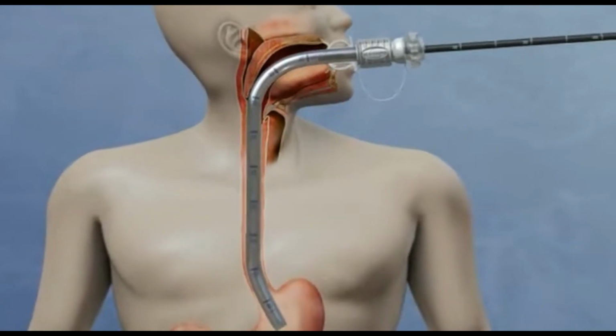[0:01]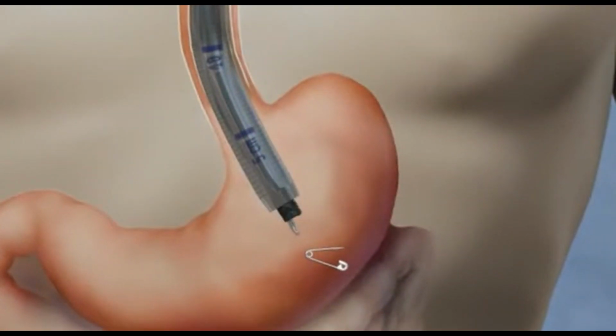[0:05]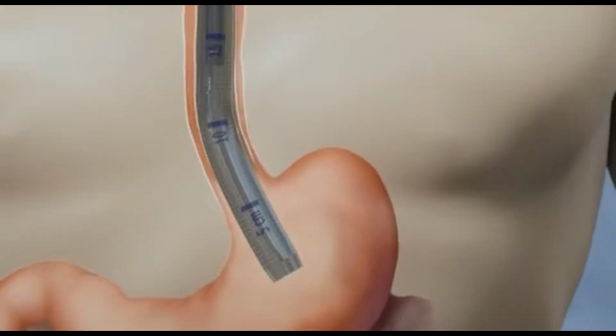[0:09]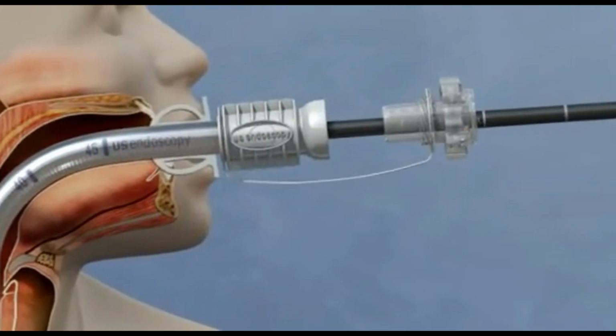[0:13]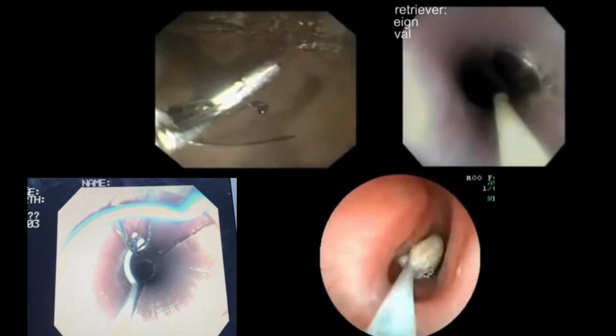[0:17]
Foreign body retrieval is a medical procedure used to locate and remove objects that have been accidentally swallowed or inserted into the gastrointestinal tract. This procedure involves using an endoscope to visualize the foreign object in real time, followed by the use of specialized tools to grasp and safely remove it from the GI tract. Some examples of foreign body retrieval are shown here.
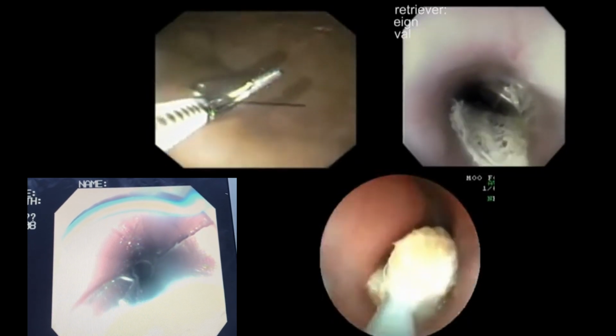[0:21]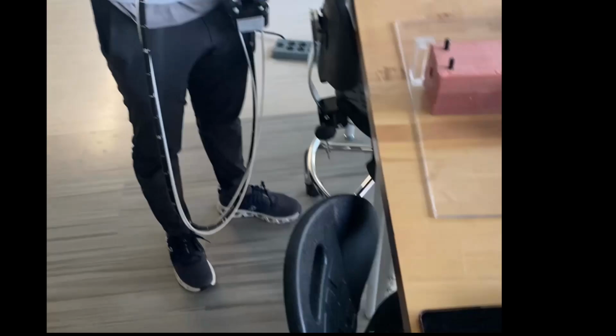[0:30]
However, what if I told you that one of these procedures is actually being performed on a completely synthetic GI tract? That's right, this recording was taken on a synthetic GI tract created completely by our Capstone team. To see how we got here, we have to rewind 3 months to the beginning of the semester.
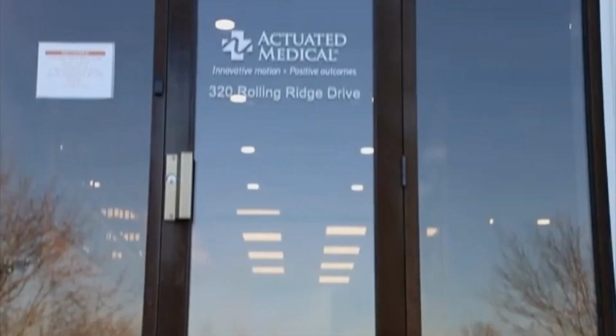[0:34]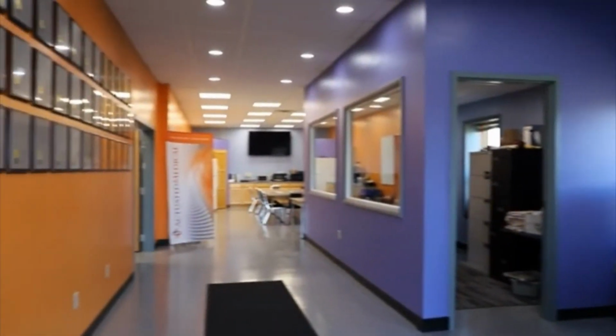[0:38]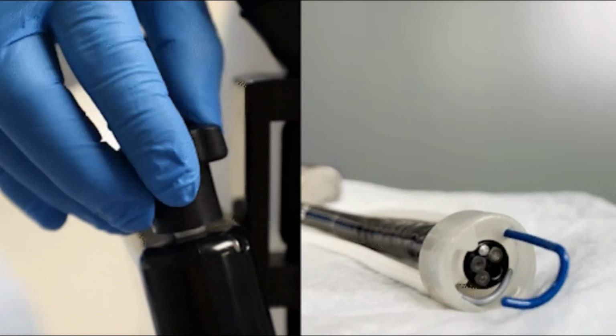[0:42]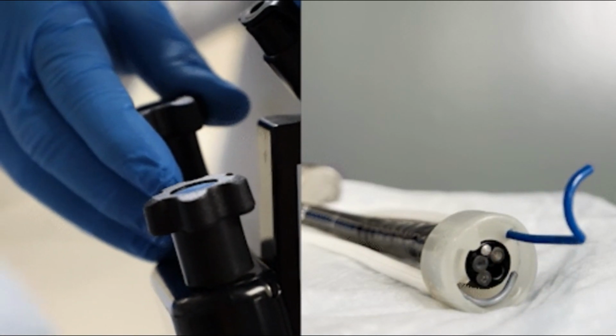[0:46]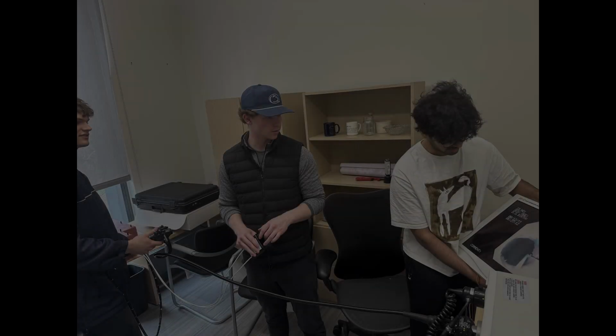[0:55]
Our group was initially retained by Actuated Medical to evaluate the effectiveness of their FDA-approved device, the GripTract. This device is currently approved for tissue manipulation during gastrointestinal procedures. We wanted to explore a new question. Could the GripTract also be used to retrieve foreign bodies from the GI tract? To answer this, we needed a realistic testing setup. Since no suitable products currently exist in the market, we decided to develop our own synthetic GI tract simulator.
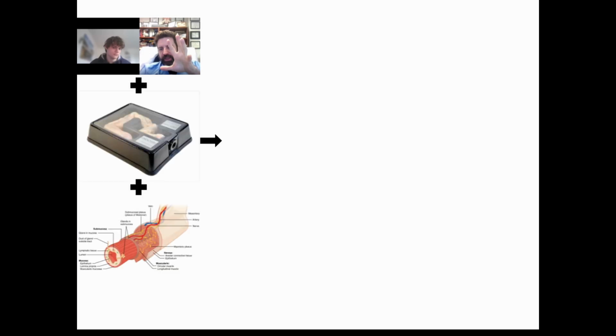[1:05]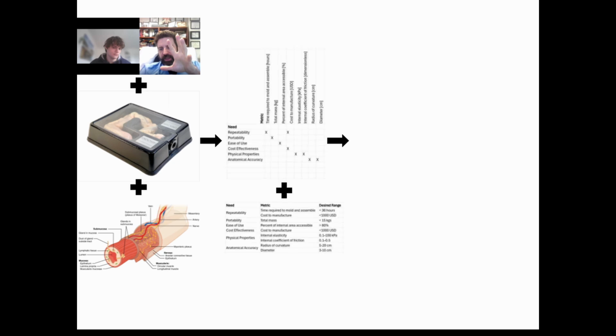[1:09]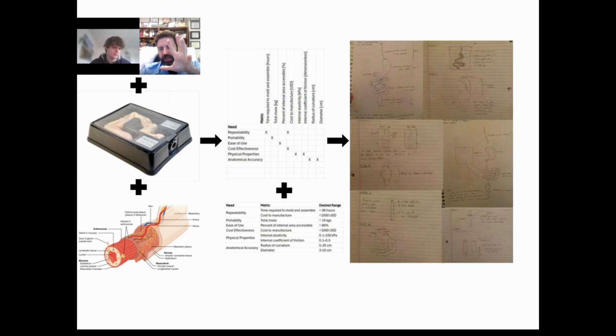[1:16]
Our journey began with interviews. We spoke to a wide range of clinicians involved in foreign body retrieval. At the same time, we performed a patent search and reviewed existing literature to better understand GI tract models. Based on what we learned, we developed a list of specifications and desired performance metrics that would help us evaluate the GripTract. Next, each team member brainstormed ideas, and we ended up with over 40 different concepts.
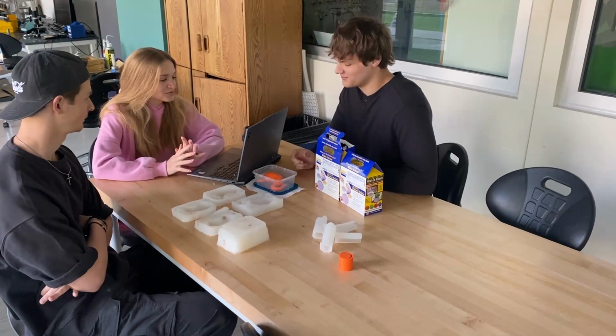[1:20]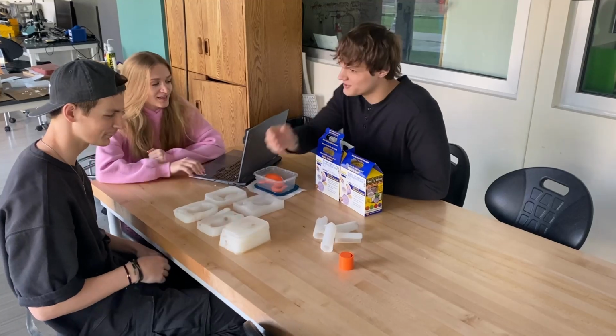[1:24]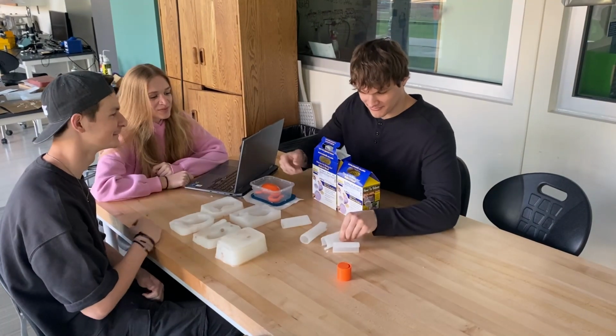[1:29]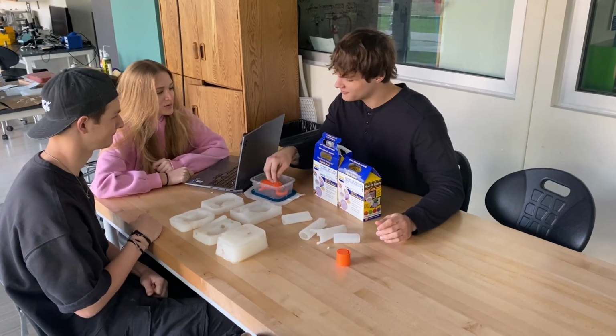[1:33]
We then moved into alpha prototyping, focusing on form and materials. We found that a tunnel-style design was the most accurate and durable approach, especially compared to simpler tube models. We made our first prototype by taking a scaled-down 3D model of the stomach, placing it in a container, and simply pouring silicone over it to create a flexible, realistic form.
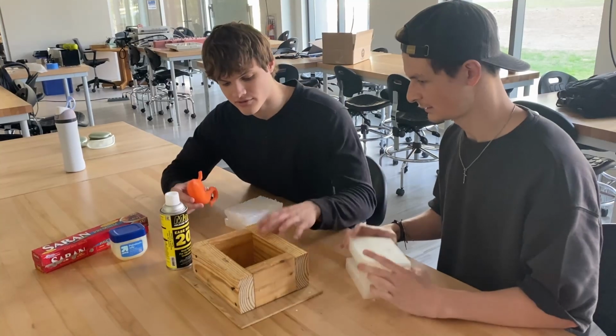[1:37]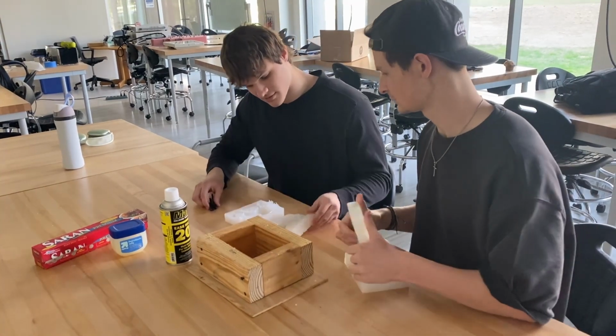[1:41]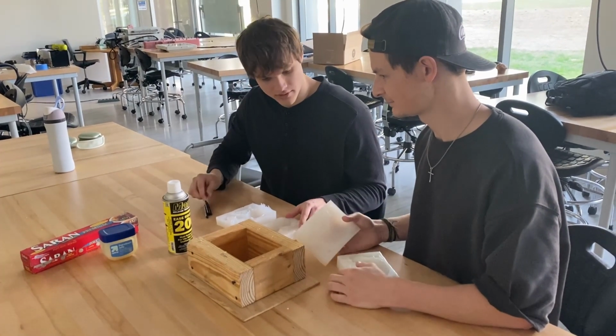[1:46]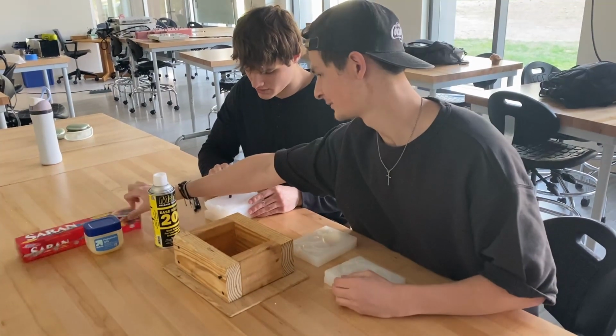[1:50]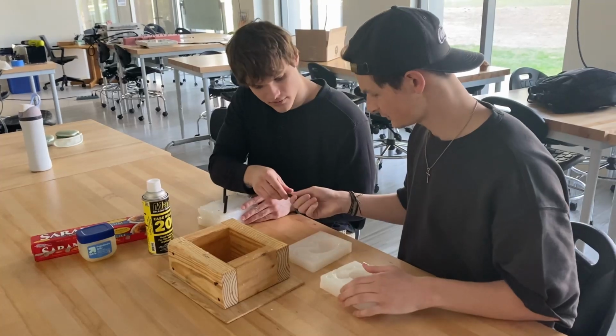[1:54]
In the beta prototyping phase, our challenge was to make the tunnel system easily accessible for inserting and retrieving foreign objects. We solved this by creating the model in 2 silicone halves that could be opened then resecured after each use. To make that work, we allowed the first layer of silicone to cure, applied a release barrier using petroleum jelly and anti-stick spray, then poured a second layer on top. This allowed us to separate the 2 halves cleanly.
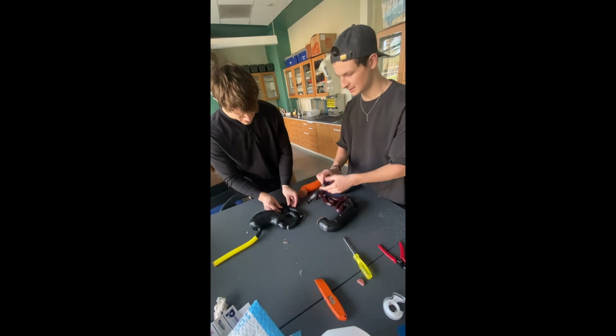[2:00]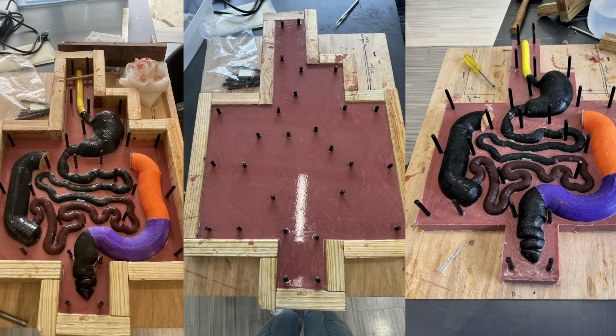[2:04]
With the process refined, we moved on to a full-scale version. We designed the model in SolidWorks, printed it in 8 sections, and glued them together. Then, we repeated the silicone pouring process, this time using 6 gallons of silicone dyed to simulate the natural color of the intestines. We also built a custom containment frame from 2x4s to help reduce silicone waste and match the model's unique geometry. Dowel rods were inserted to help align and secure the 2 halves.
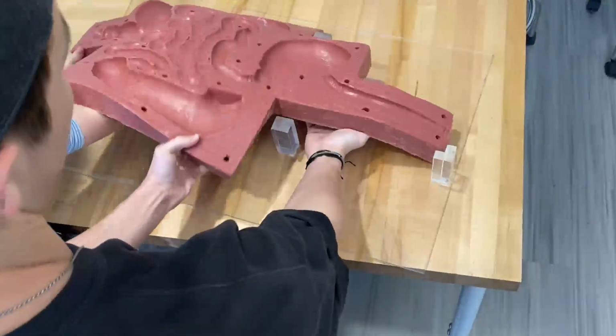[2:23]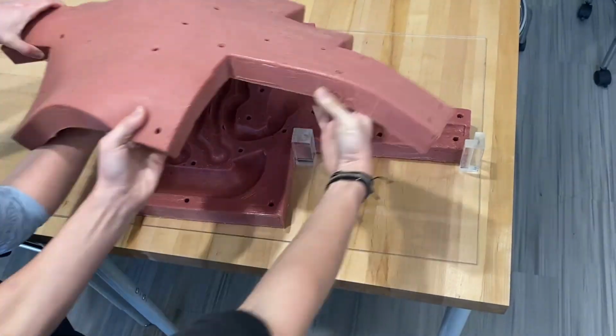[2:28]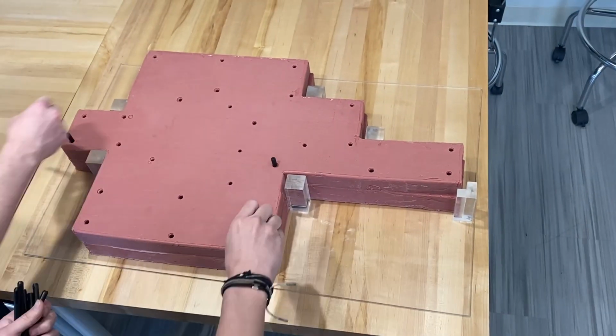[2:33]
For extra alignment support, we cut a 1/4-inch sheet of acrylic and fused acrylic prisms at key flex points to improve fit and stability. Finally, we had our completely synthetic GI tract, a 3-part system including a frame, bottom half of silicone, and top half of silicone, all secured using dowel rods.
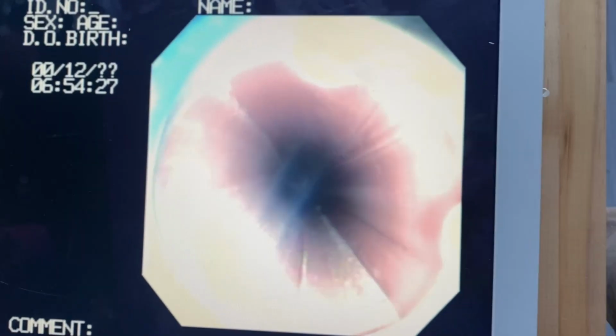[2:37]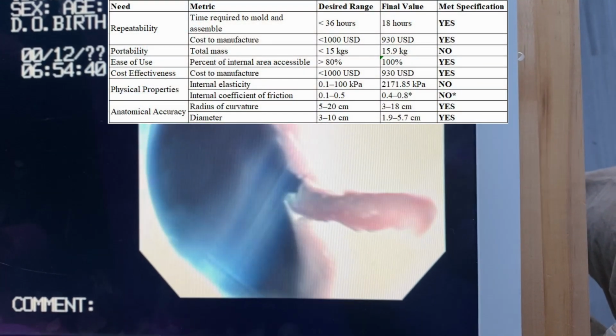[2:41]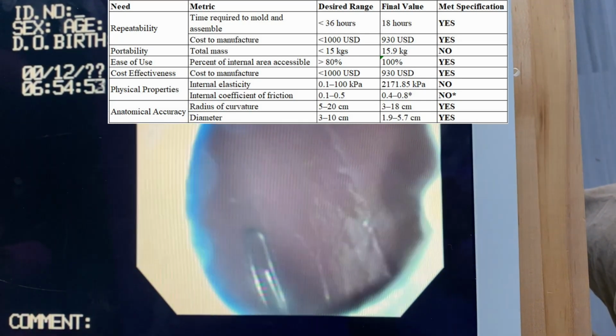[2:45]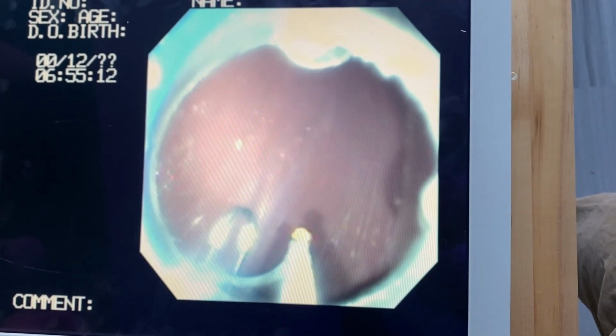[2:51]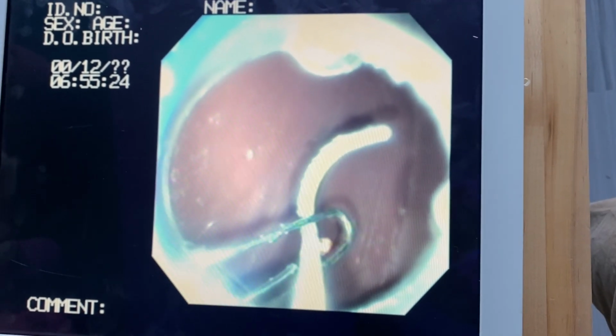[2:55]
We then validated our model using an endoscope and the GripTract device provided by Actuated Medical. Upon verification, we met our desired metrics for repeatability, ease of use, cost-effectiveness, and anatomical accuracy. However, we had to make a few compromises on physical properties to protect the model from interface impaction. In the end, we successfully created a realistic GI tract simulator that can be used to evaluate the GripTract's capabilities and serve as a valuable teaching tool for clinicians.